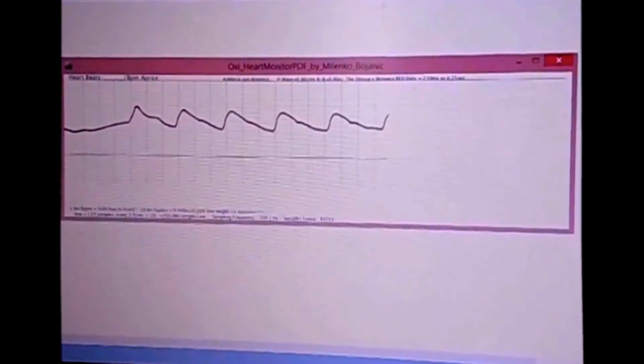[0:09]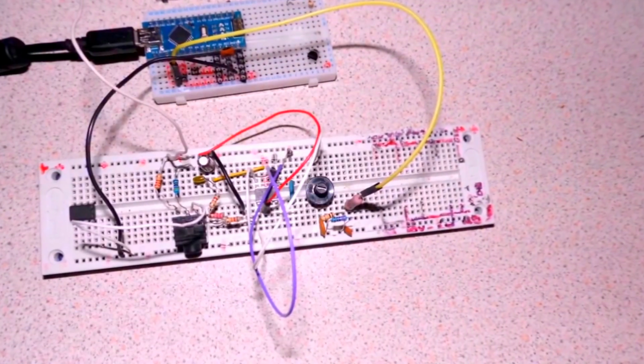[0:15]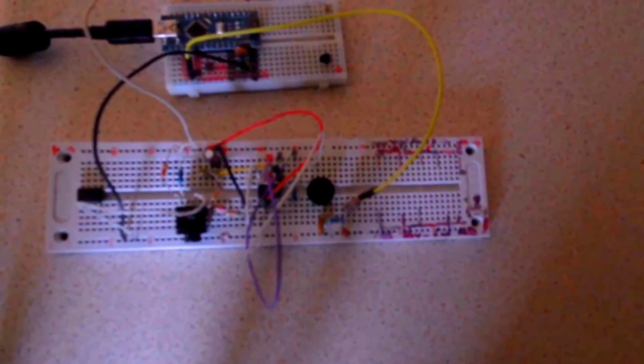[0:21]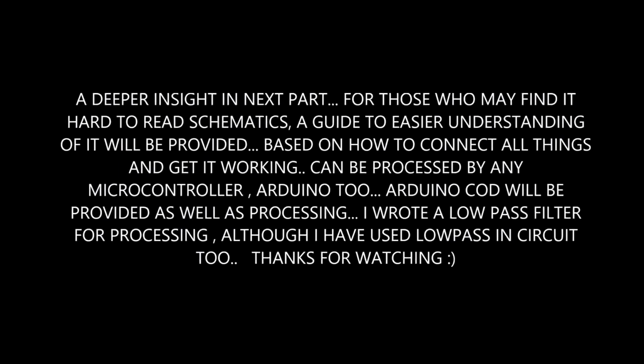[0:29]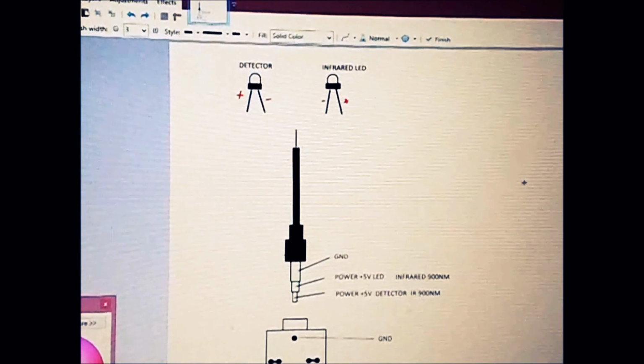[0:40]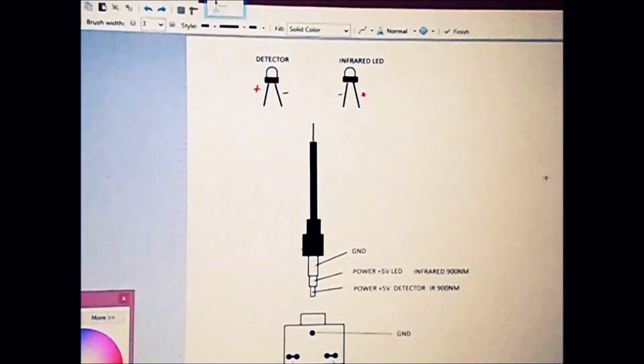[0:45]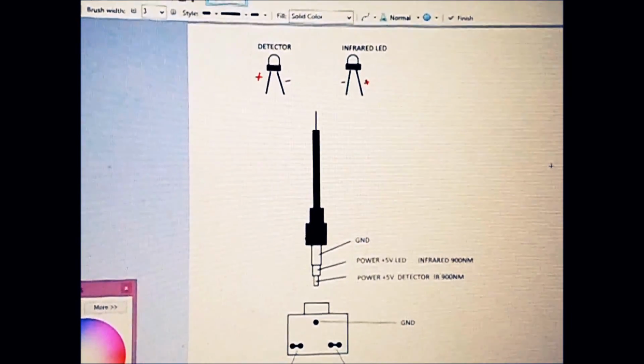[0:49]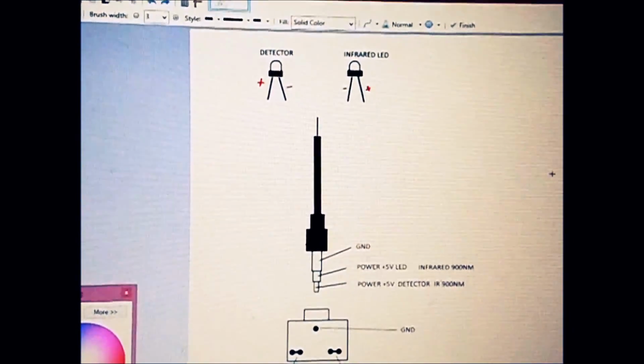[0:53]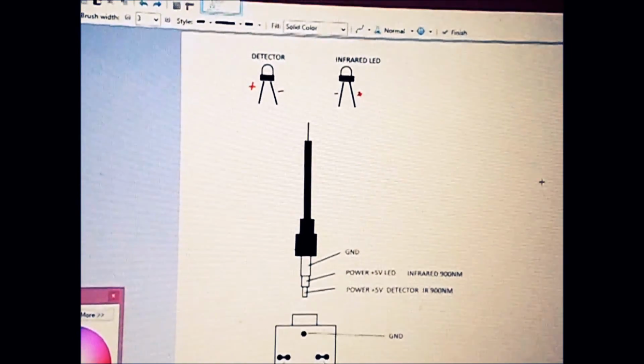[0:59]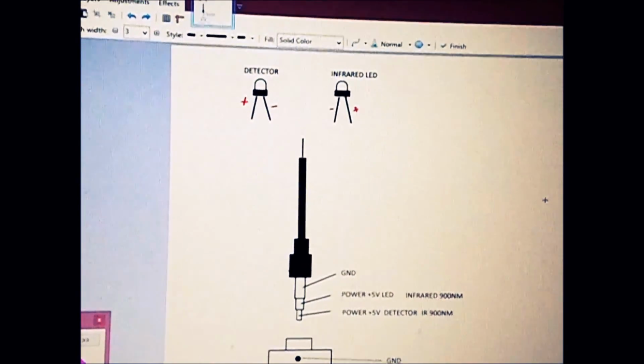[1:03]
Okay, like I said in our first part, we had just a little introduction of what we have made, and that was an oximeter using our LM386, which is an audio op-amp. So let's get back to the cable, which is a very important part: how to make the cable.
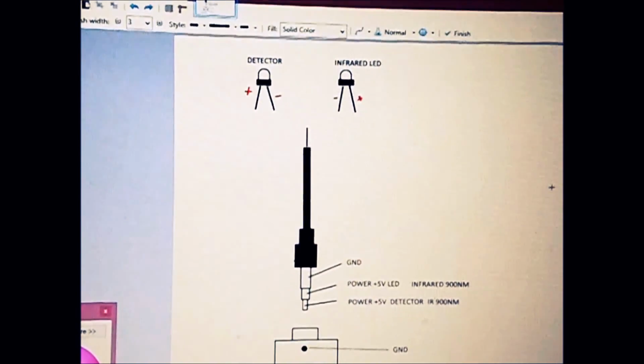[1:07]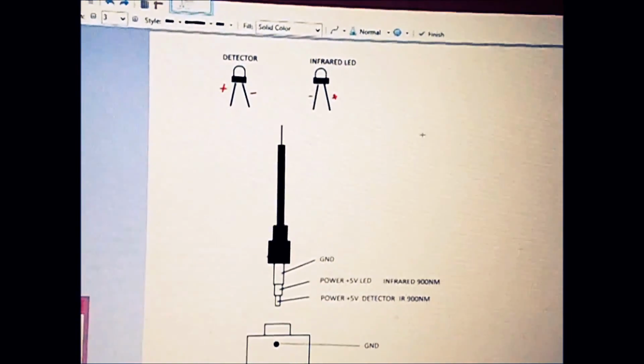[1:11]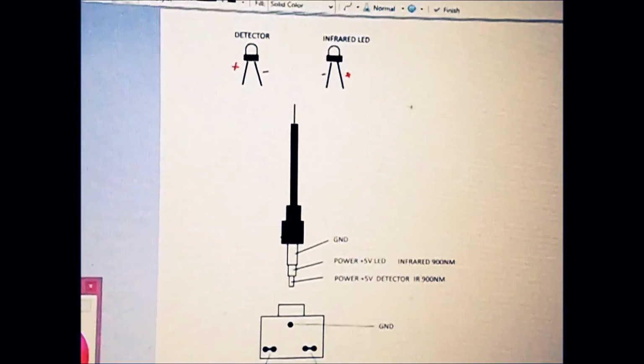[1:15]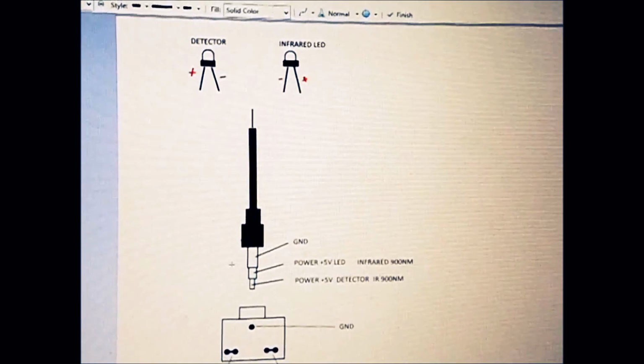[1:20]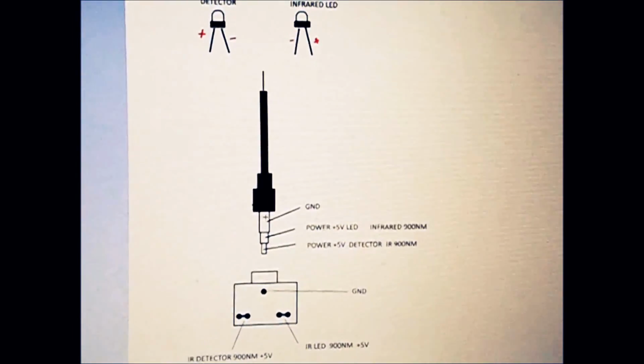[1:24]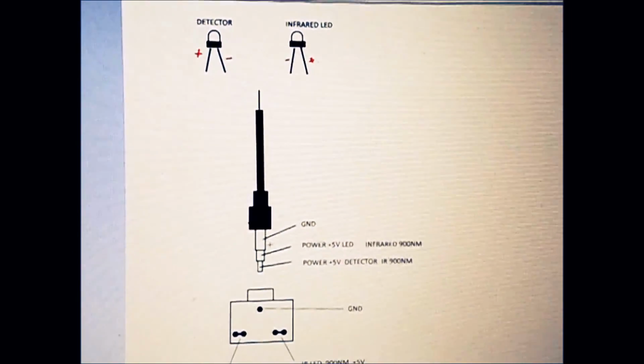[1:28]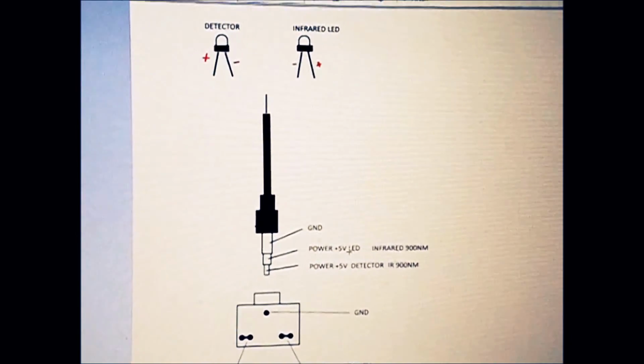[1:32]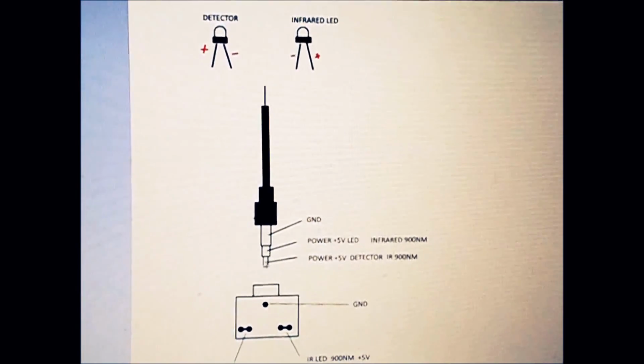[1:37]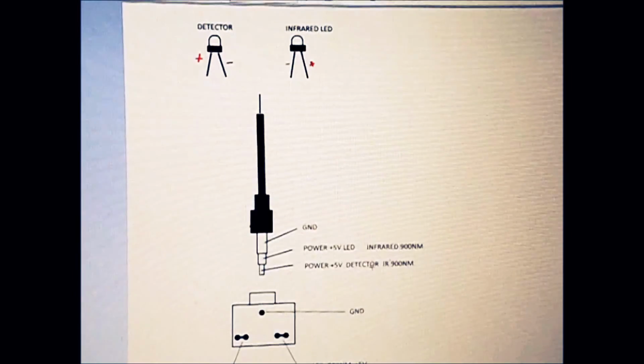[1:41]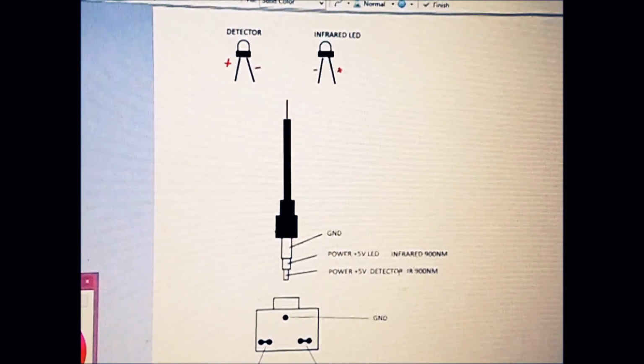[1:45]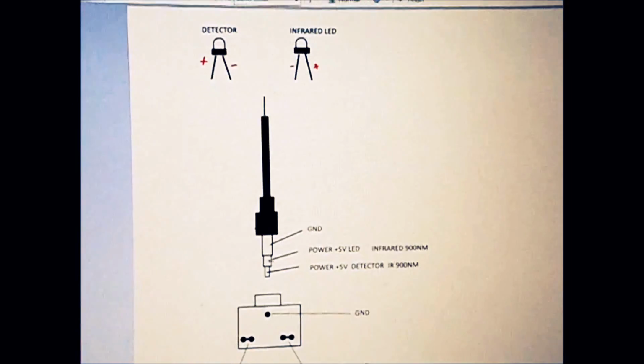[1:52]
In making the cable, we need to know first that we need to connect 3 wires, even if we have 4 connections, and for that we will use an audio cable, which has ground connected to this bit there, which is the first ring. Then we have power 5 volts that will power the LED connected here, and we have power of 5 volts connected to the infrared detector through the resistors, obviously, and this one is going through resistors, which is 150 ohms,
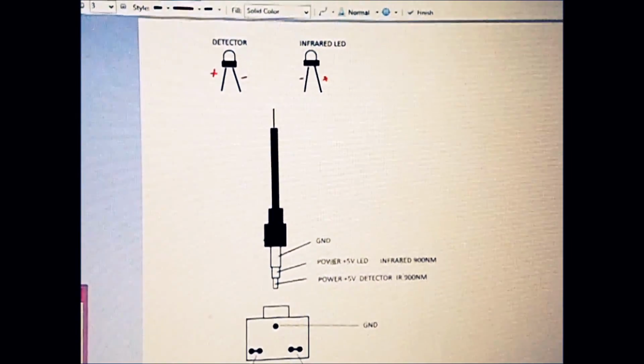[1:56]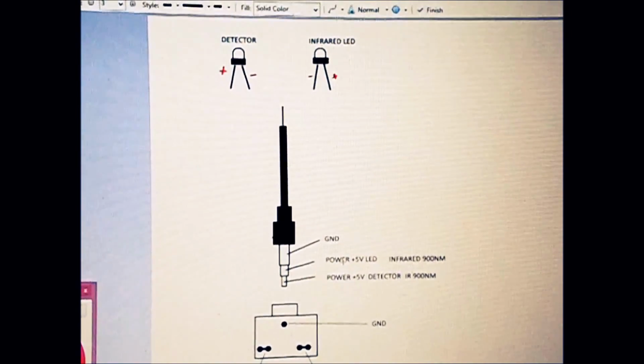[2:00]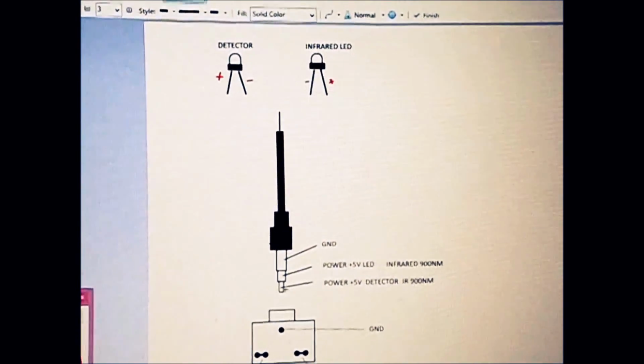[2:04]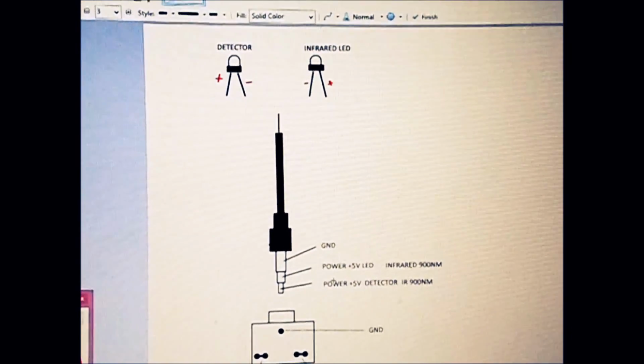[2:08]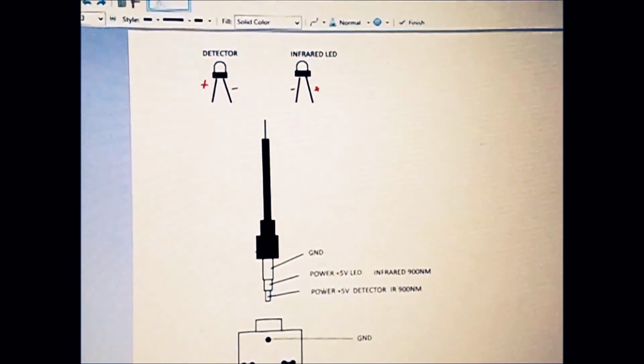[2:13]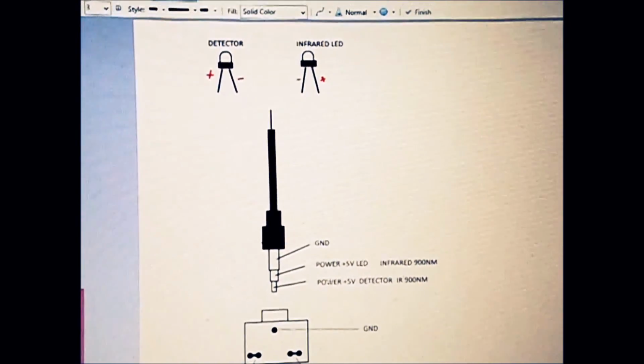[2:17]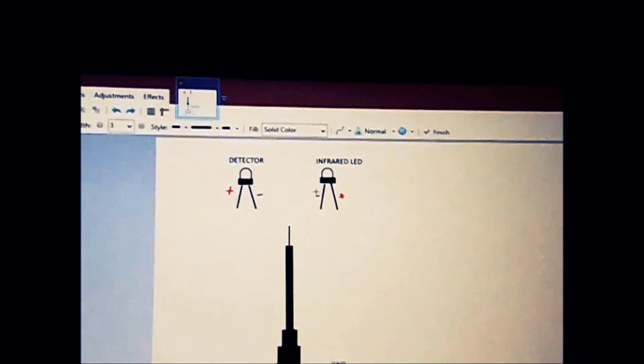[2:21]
that middle one, and I use a pot, which is 1k, so that gives me really a lot of control over the LED. And on the detector we have around 200k, not just a resistor. We have an 83k resistor and we have a 100k potentiometer. So let's get back now to how we need to connect our LED.
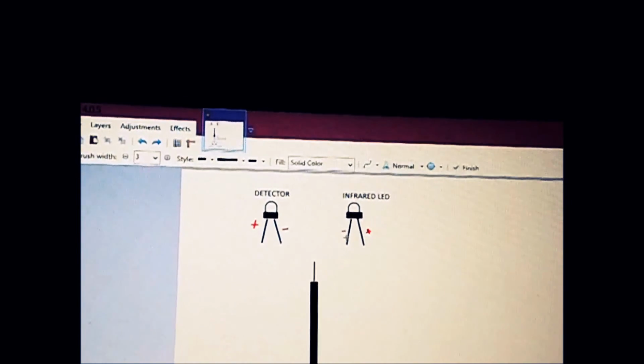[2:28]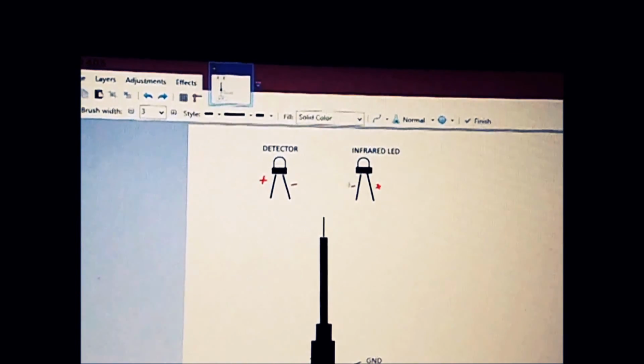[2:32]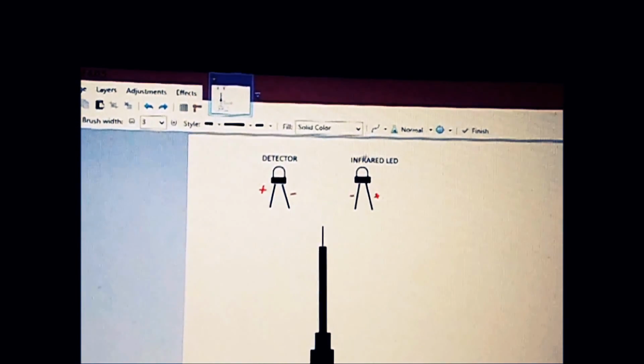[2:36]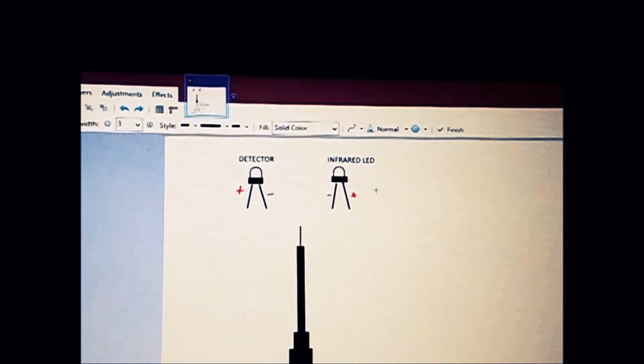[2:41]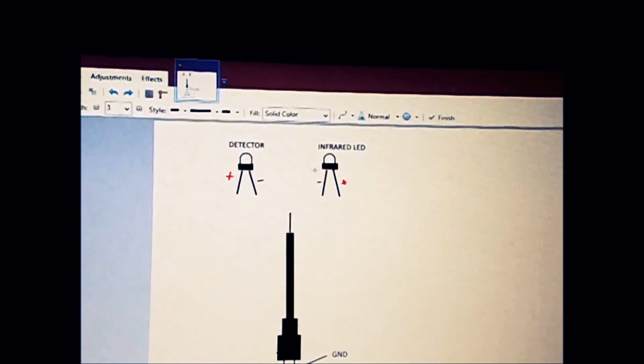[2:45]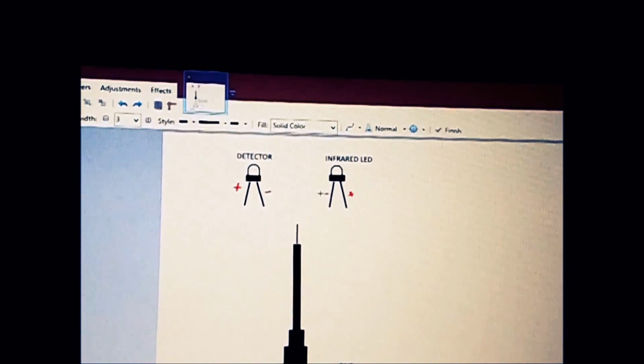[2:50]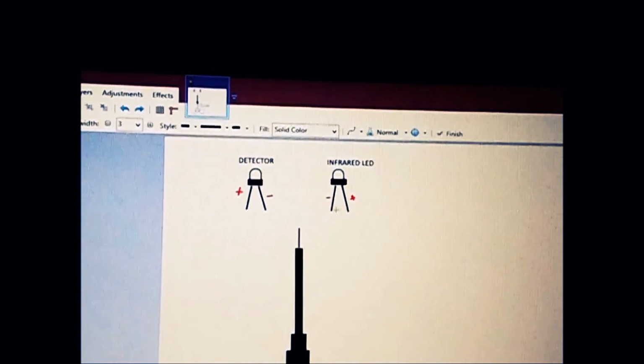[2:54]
First, the LED: you can use your multimeter and connect the black one to, let's say, this wire, which is minus here, and the red one here. And if you get your LED to actually show you light, a little bit of light, then you have that connection right. If you don't, swap it, simple as. So you want your negative to be on this side and positive on this side in this example.
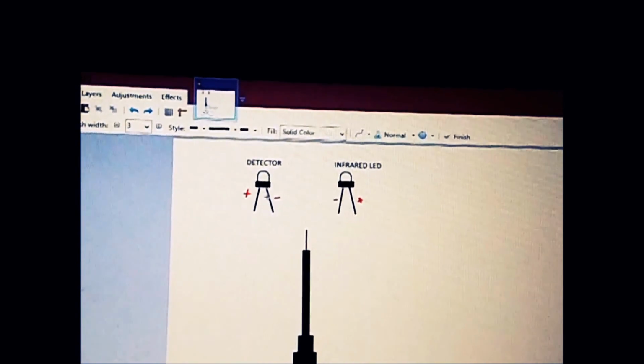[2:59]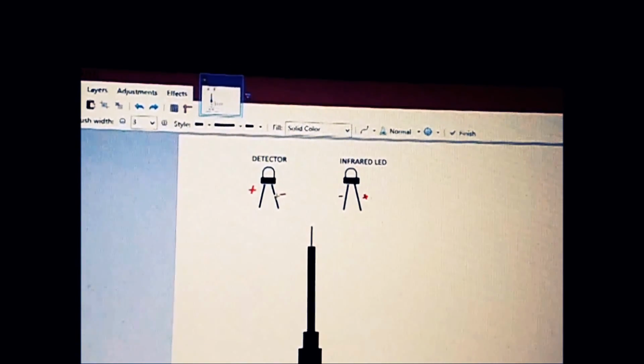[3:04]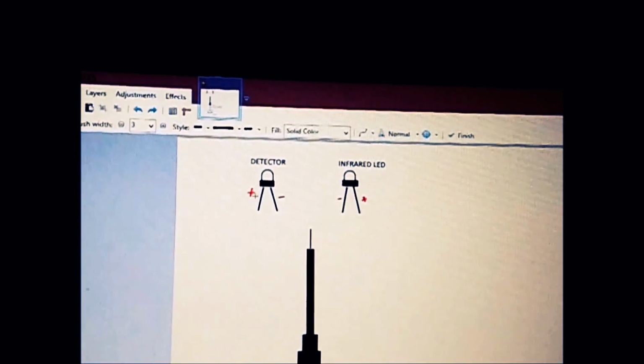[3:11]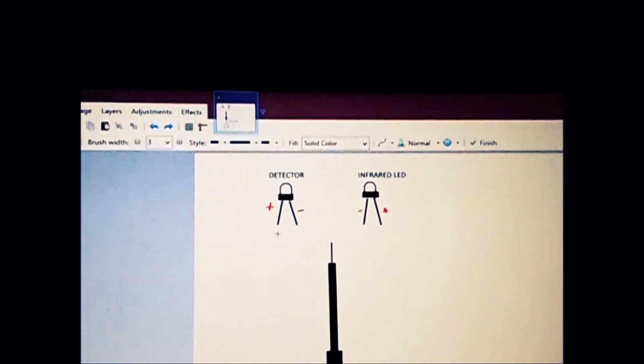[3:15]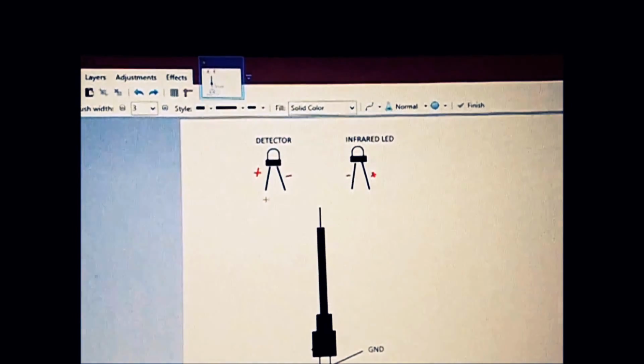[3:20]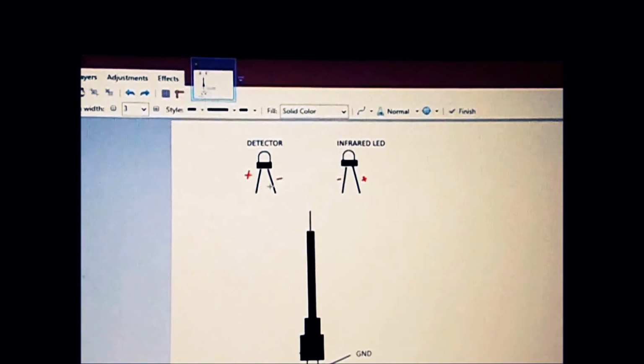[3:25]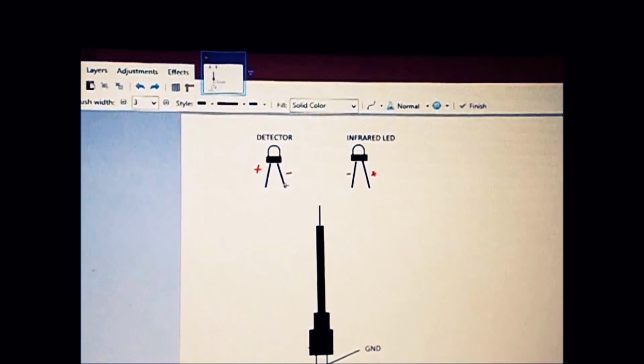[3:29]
Your detector, connect it as well to the multimeter, set to, let's say, 2 meg on your multimeter, and put the black one on one side and the red on the other side, and move it around in daylight, and you'll notice where you have a bigger source of daylight that the resistance actually changes. If you notice that, and your black one is connected on the multimeter on this side, red one on this one, then you have them the right way.
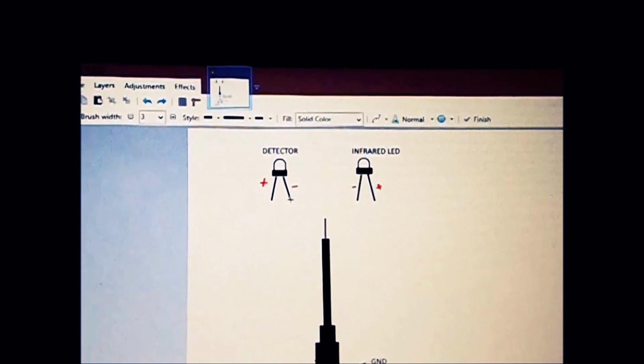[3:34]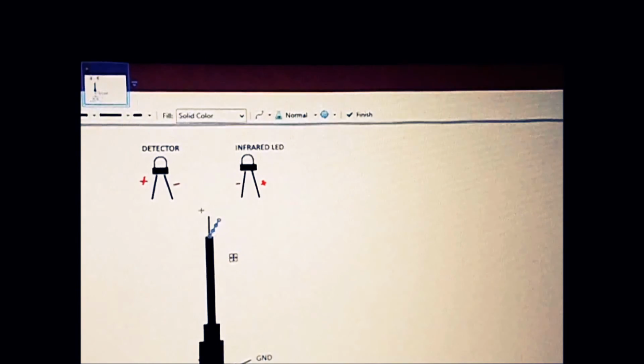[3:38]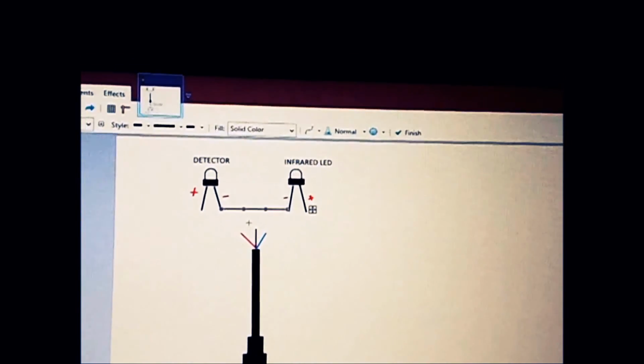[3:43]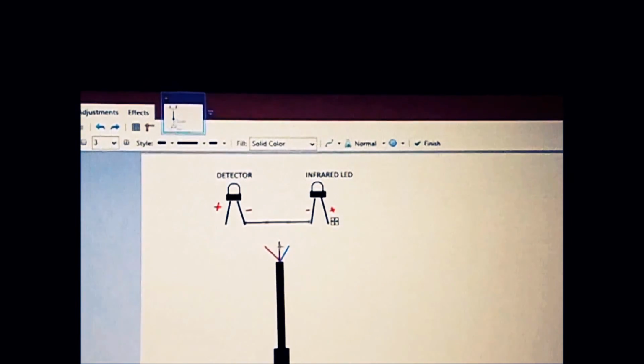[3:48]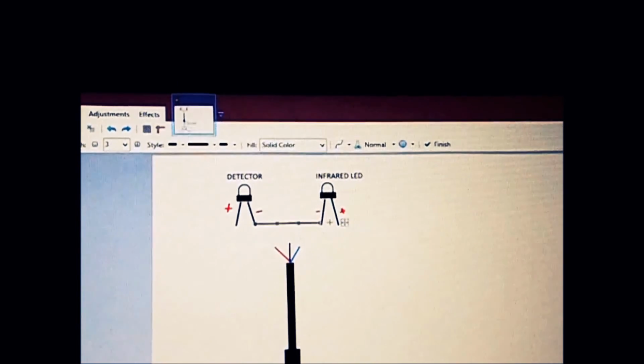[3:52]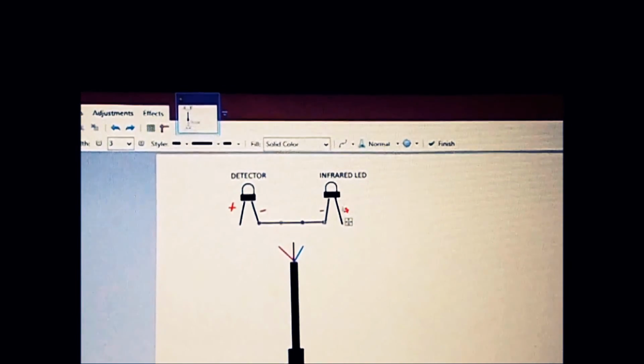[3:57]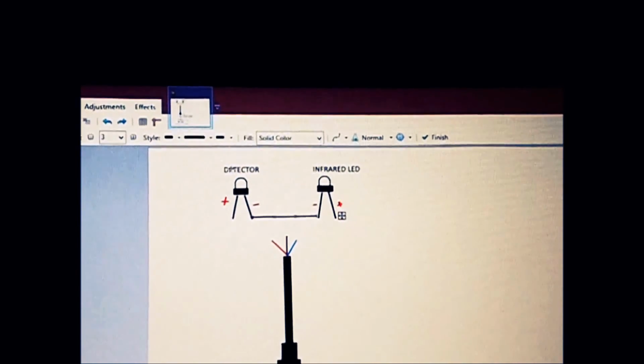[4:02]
Now you need to connect your negatives into one, and we have done that by doing it like this. And then on our cable we'll have ground, which is brown, and the blue one, which is powered in 5 volts to the infrared LED, and the red one will power, let's say, your detector. So let's get back now to the cable.
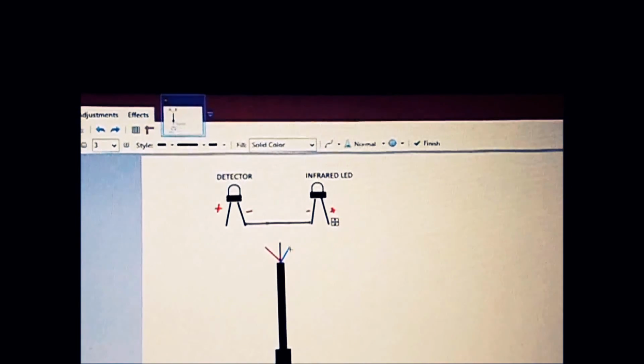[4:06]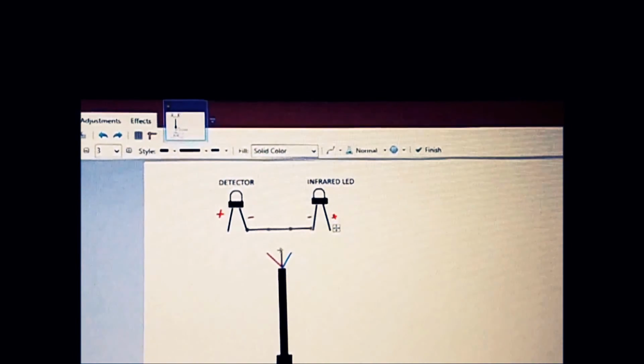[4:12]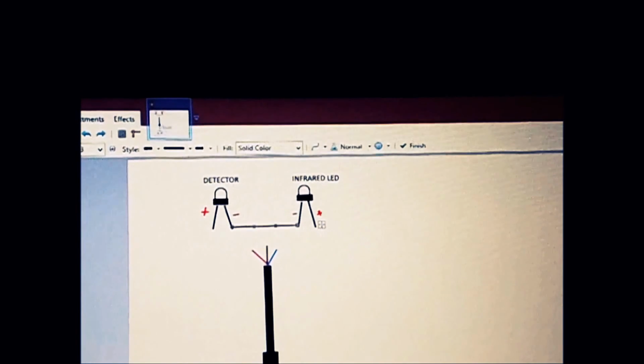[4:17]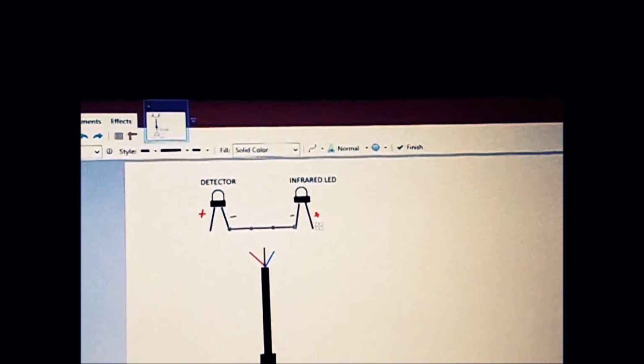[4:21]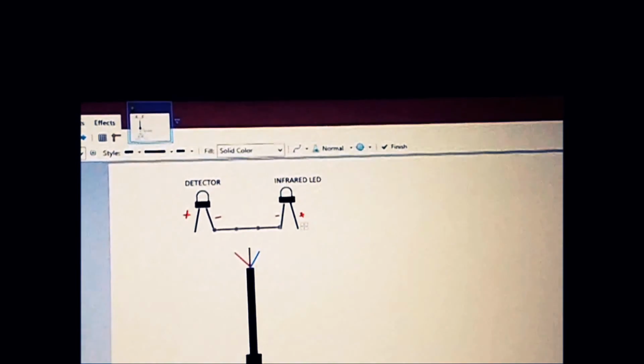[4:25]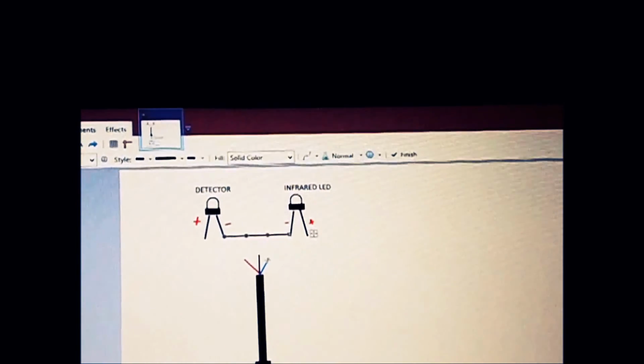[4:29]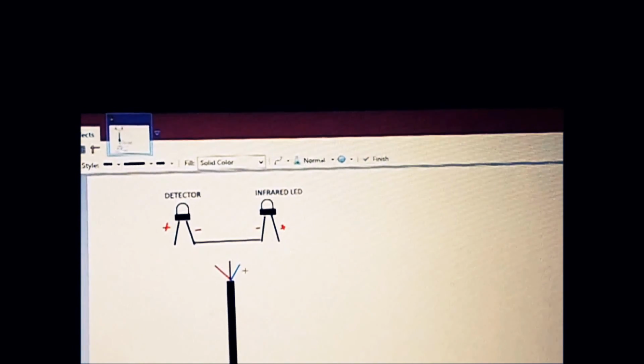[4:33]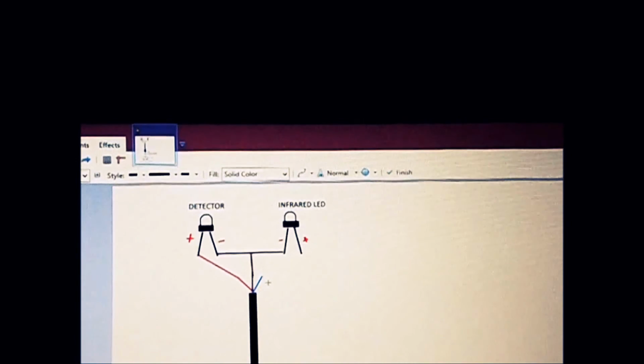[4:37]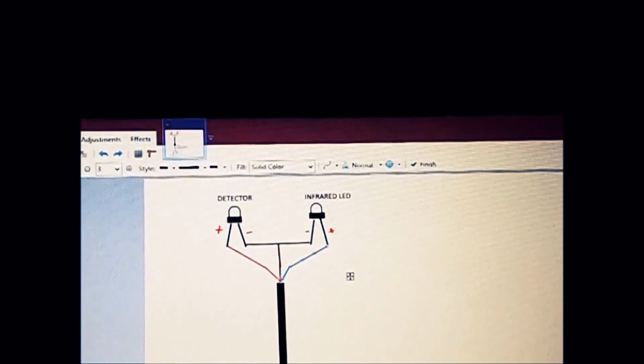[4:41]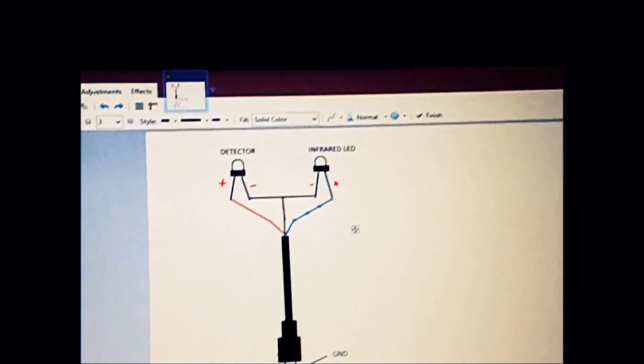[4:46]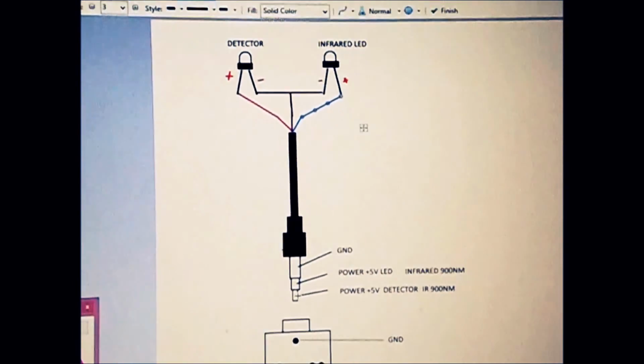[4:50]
Connect the multimeter to your blue one, let's say, or whichever color it is. First connect the multimeter to ground, black one, and find with the other end of your multimeter ground here. Then connect to any wire, and if you detect that middle one, and it happens that this is the blue one, then the blue one you will connect to your LED, and connect the multimeter to your red, and then connect it to your bottom one. Sorry, I moved it off.
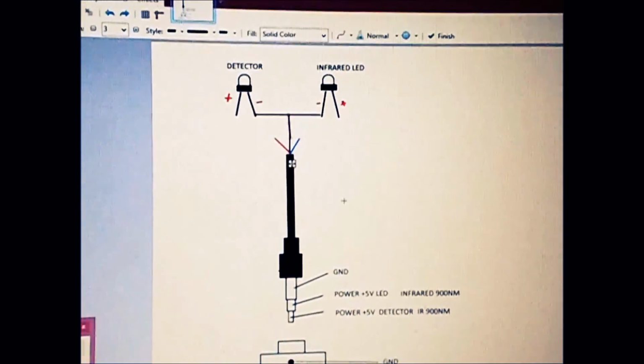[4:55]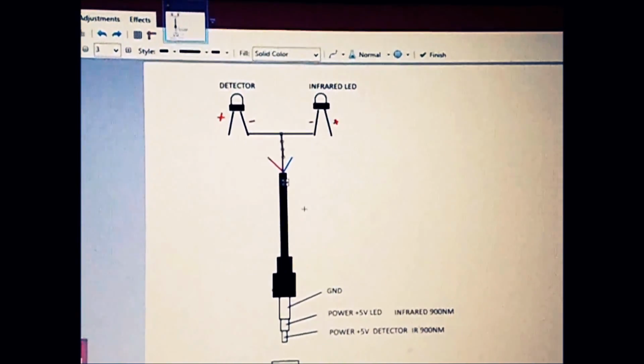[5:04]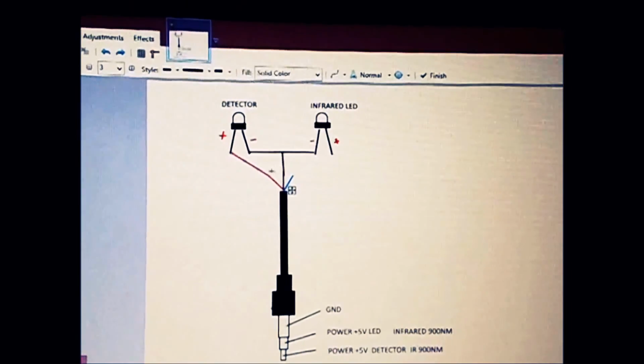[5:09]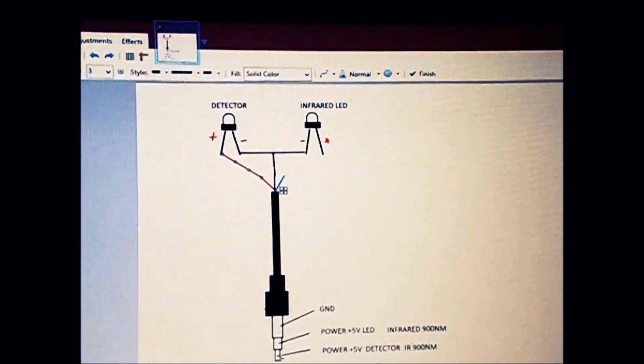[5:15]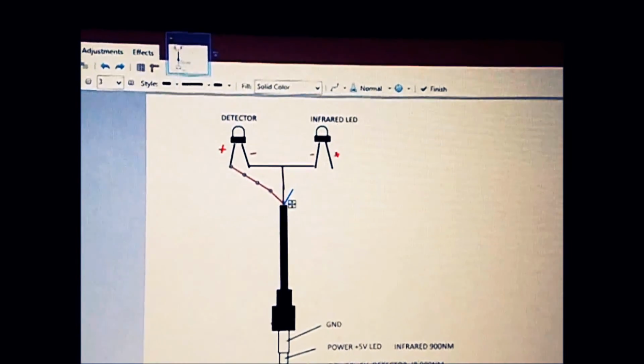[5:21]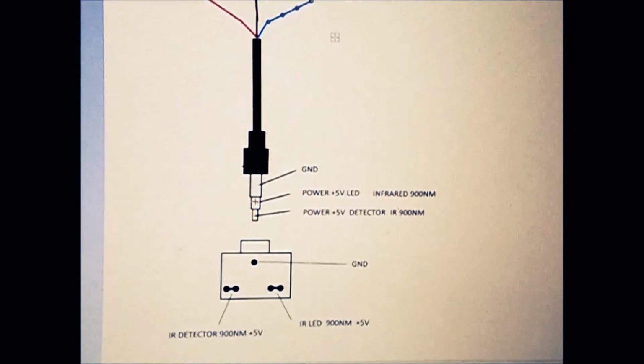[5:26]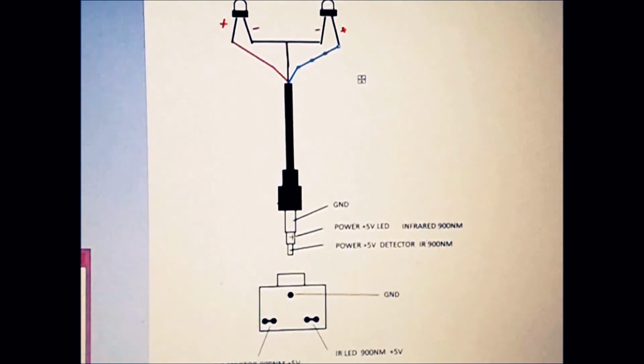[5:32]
Let's get back: connect ground to the multimeter and check it here, where do you get a reading. Then connect your detector on the multimeter here and connect it on the bottom one, and you should get a reading. Then connect your blue wire and the middle one in this section there, and you should get a reading. So if you connected everything right, that's how it should be.
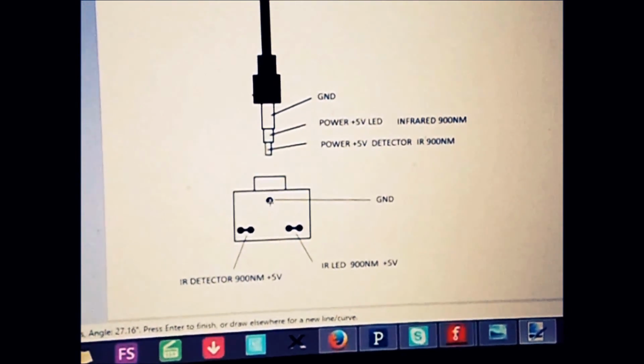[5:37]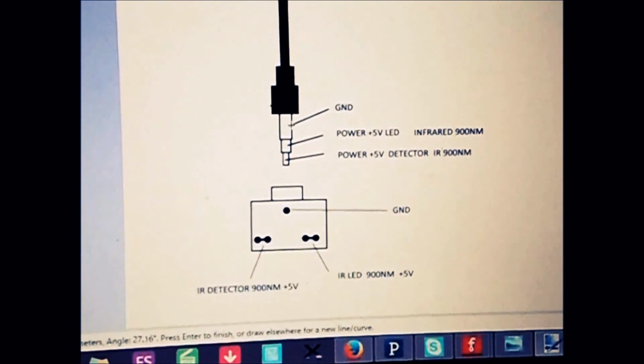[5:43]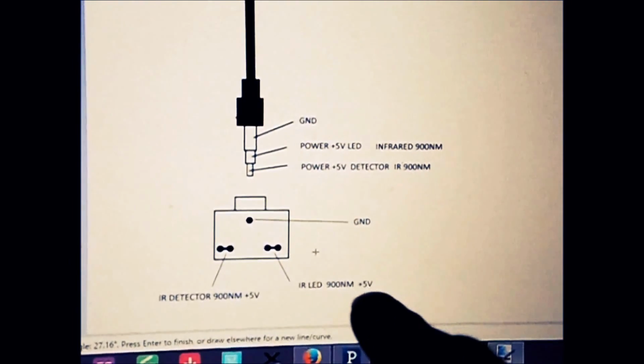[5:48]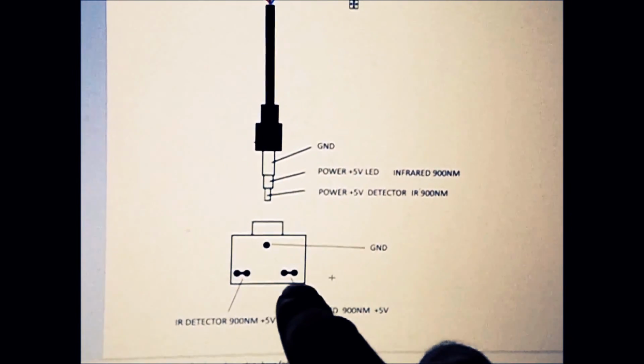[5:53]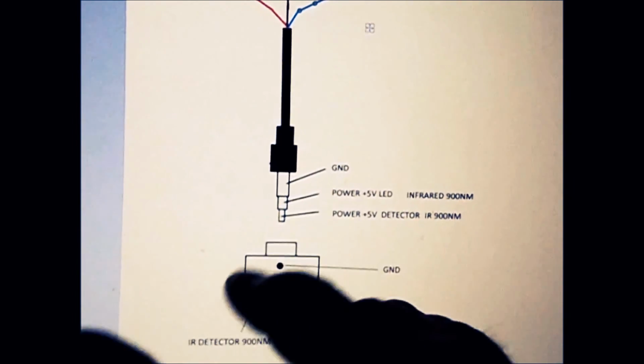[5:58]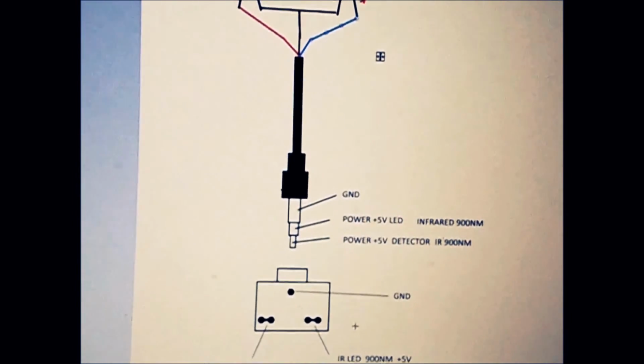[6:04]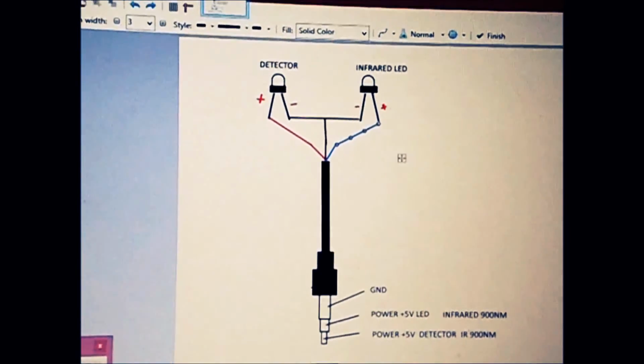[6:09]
On your audio jack, you have ground connected here and that will be connected when you plug it into this one. You have your LED on this side, and these two are like one, they are connected anyway, and on the other side you have two, they are connected as well, so it doesn't matter, they work as one. So that will be your detector. For this example I have used an infrared LED and detector, which is rated at 900 nanometers, and that's very important.
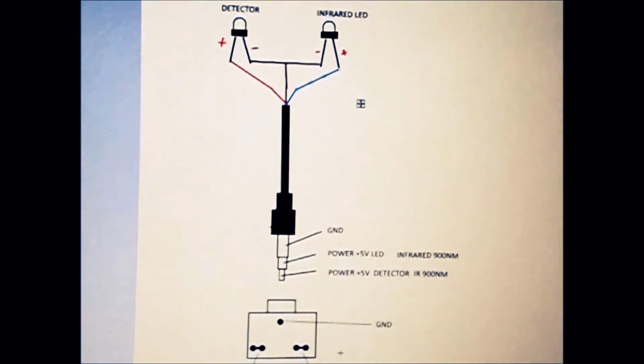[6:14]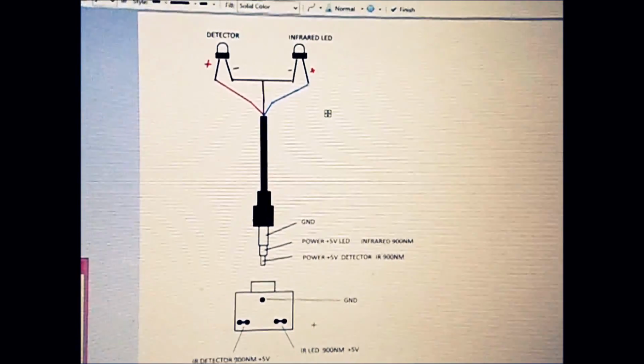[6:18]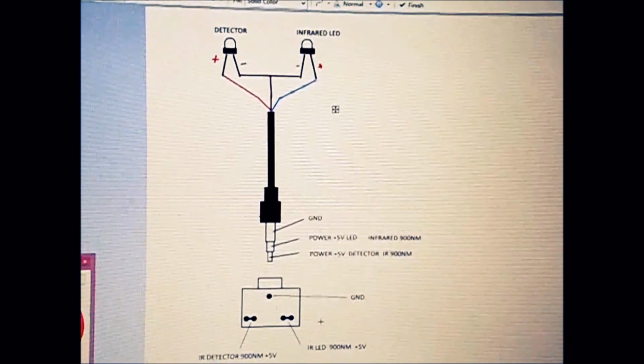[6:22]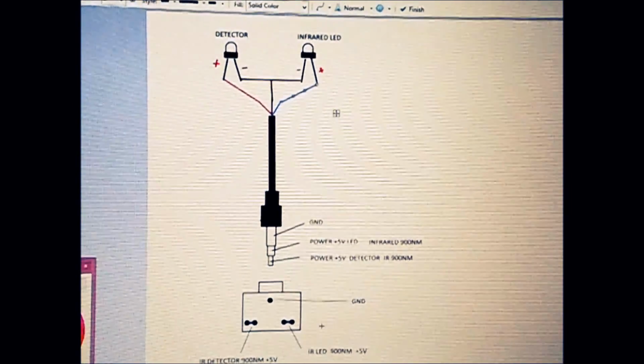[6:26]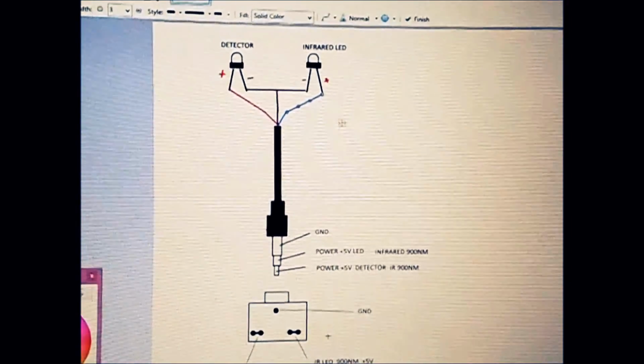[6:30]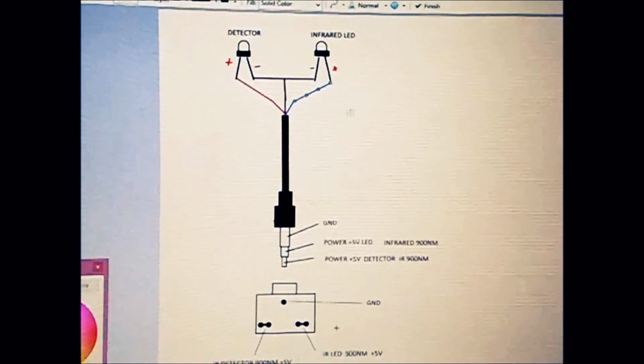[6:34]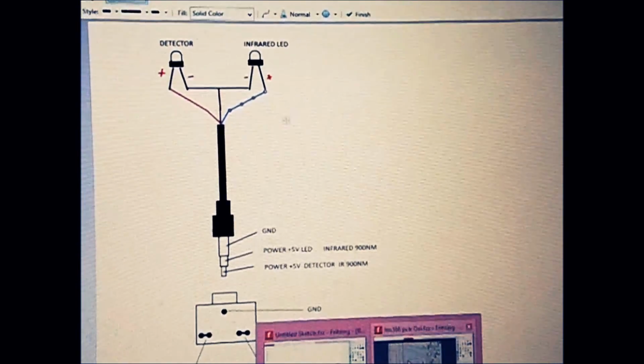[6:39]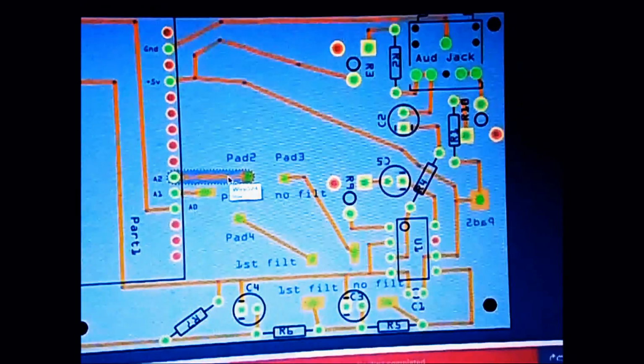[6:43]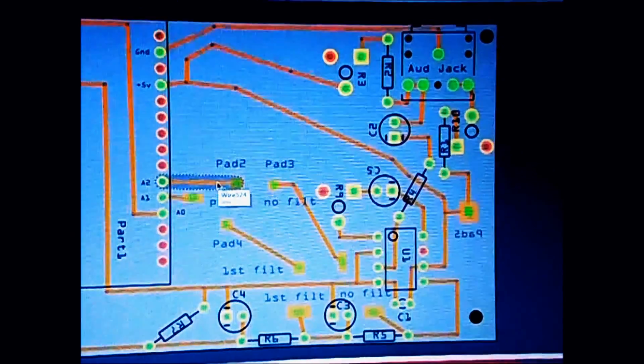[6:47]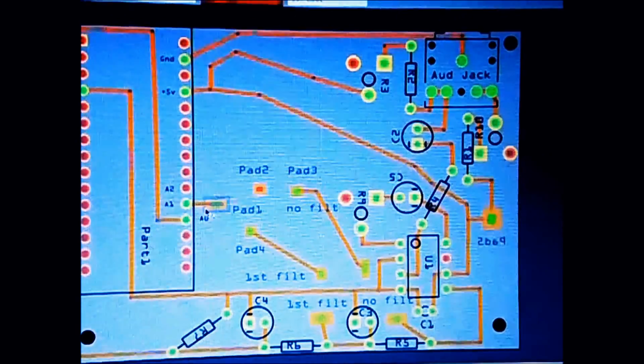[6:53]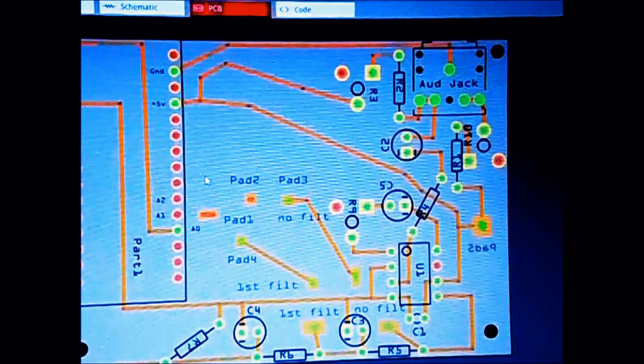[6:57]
So if you have connected everything right, this is how it should look. So picture it or freeze it, or you can slow it, stop it, and that's it. You can make your cable and make your finger clip for your finger. So we will move now on to schematics, which is, in this example, I don't need those connections at all.
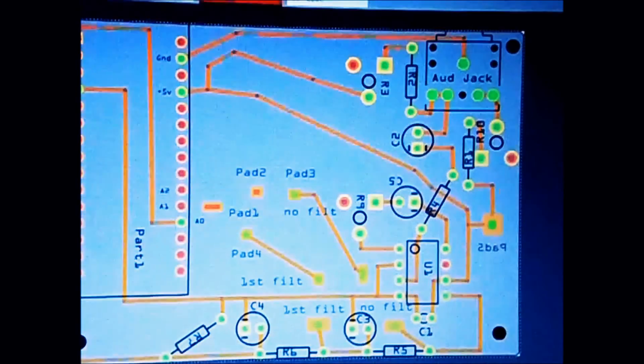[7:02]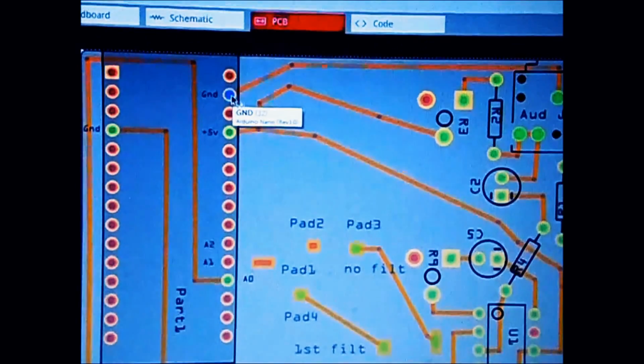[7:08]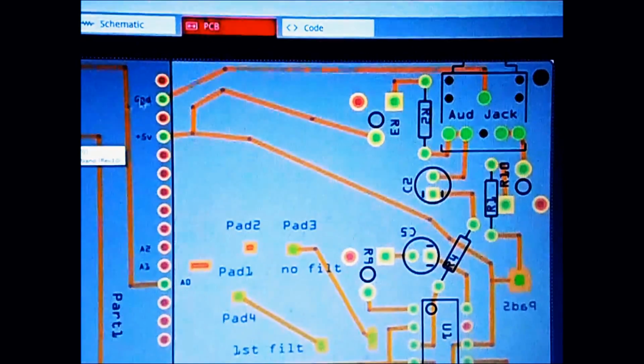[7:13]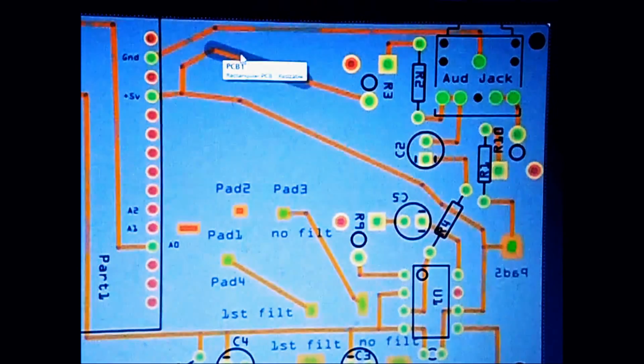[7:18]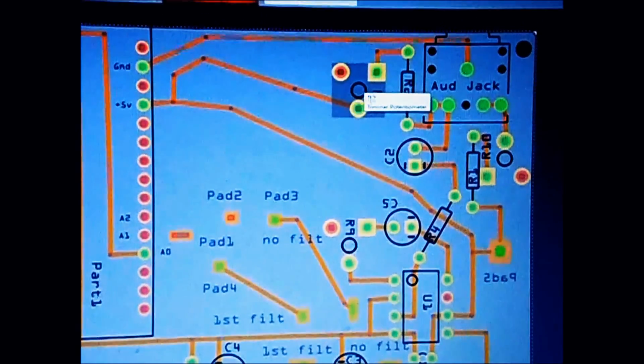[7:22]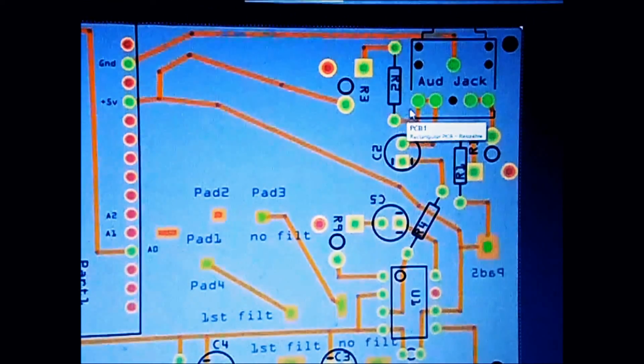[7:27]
Okay, we're going back to the jack. So we have here ground, and it goes right to ground here. We have 5 volts going from here, and those 5 volts are split in two. One is powering the detector through the 100k pot, and it goes in the 83k resistor, and it goes right into your audio jack, like we explained in the previous example.
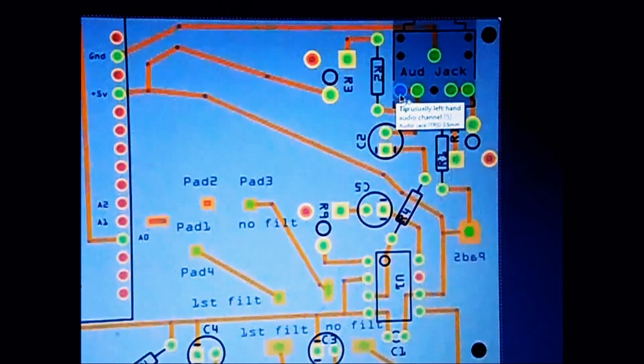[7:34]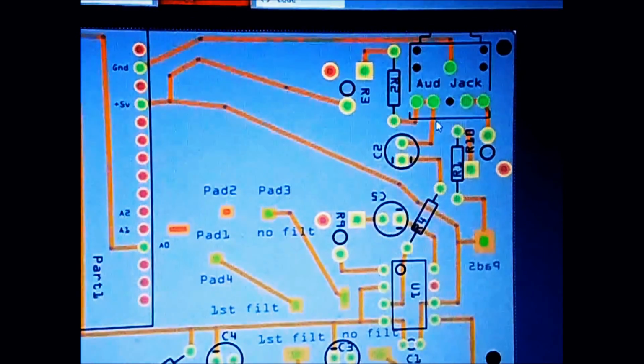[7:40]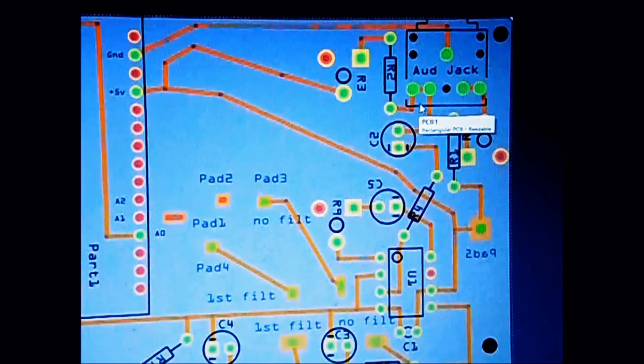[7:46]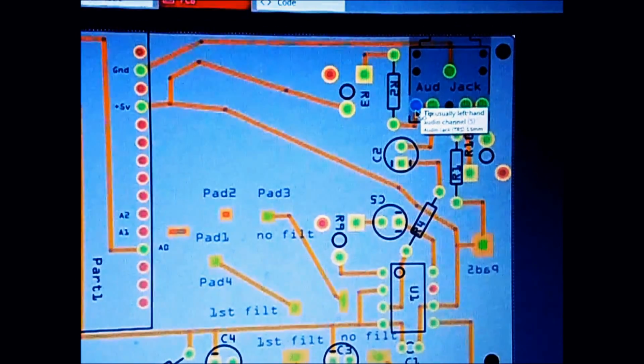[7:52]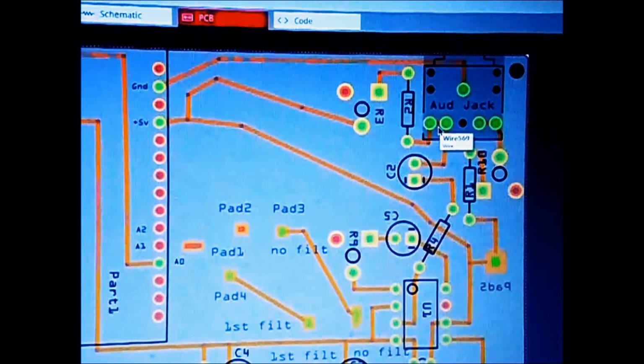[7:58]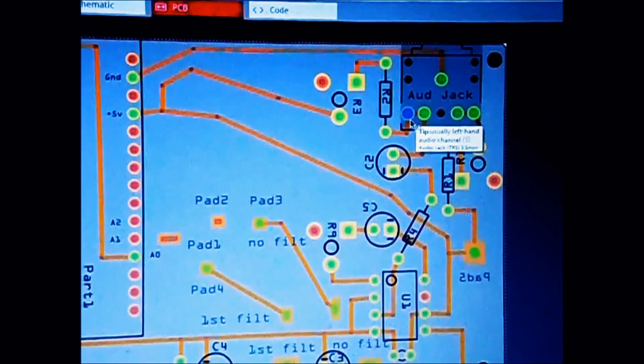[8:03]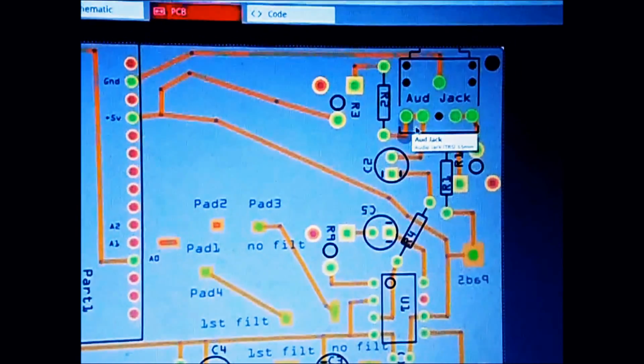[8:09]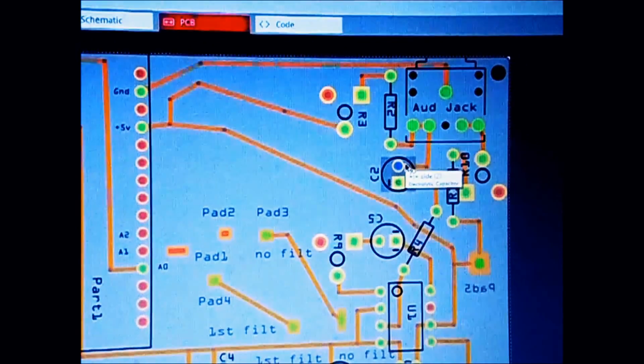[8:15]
And then your signal, when you receive some; if you don't receive anything, it will be 5 volts. So you have 200k roughly sensitivity here, and if you receive signal, it will drive it to the ground. So your signal will be different between 5 and 0. Obviously, because of 200k, it won't be really that much down to 0 volts, but you will be able to fine-tune it yourself this way. Then the signal goes out into a capacitor. I will get back to the signal after.
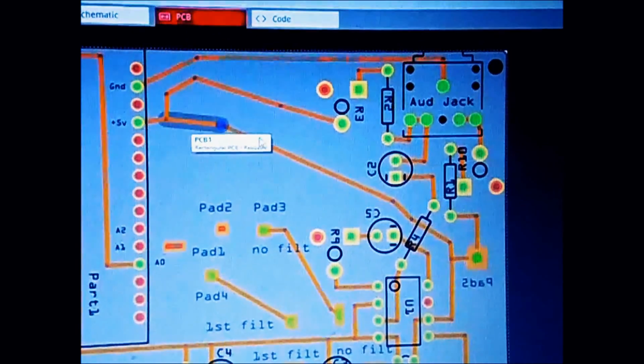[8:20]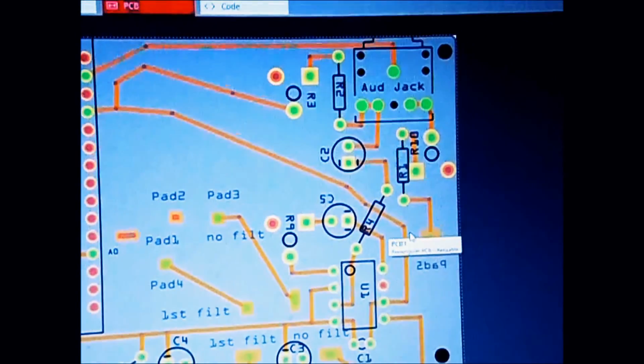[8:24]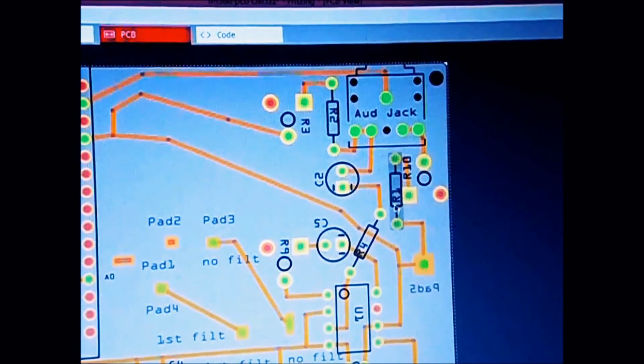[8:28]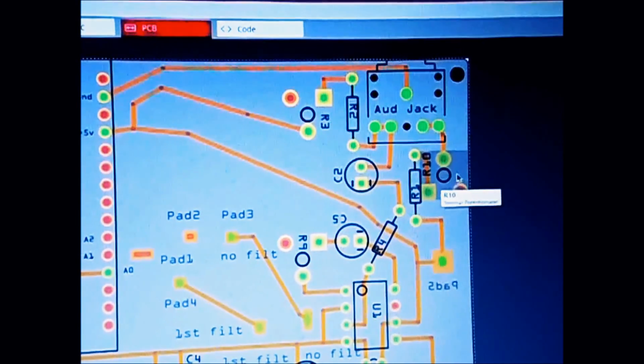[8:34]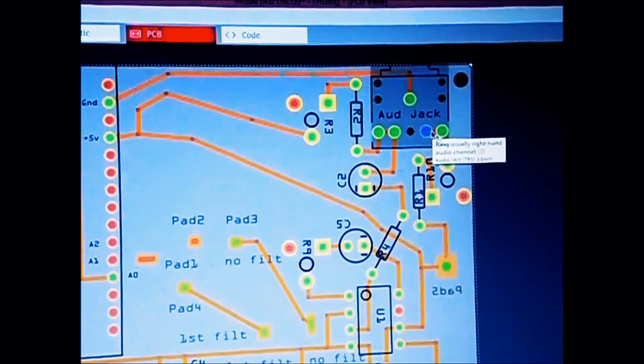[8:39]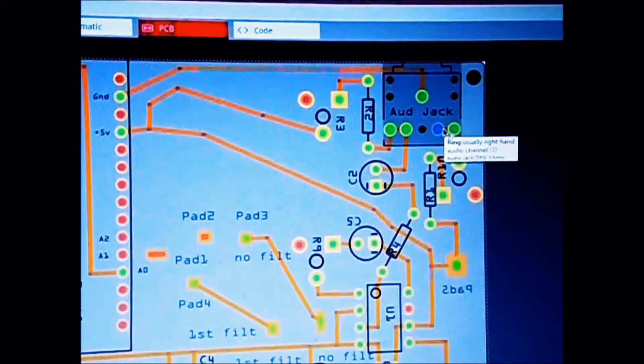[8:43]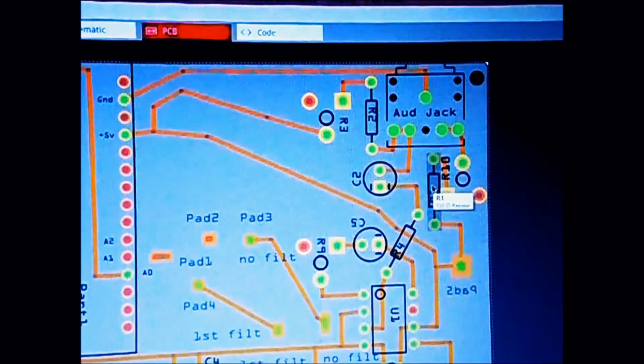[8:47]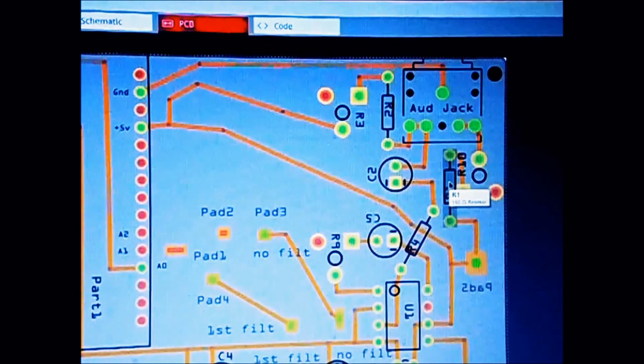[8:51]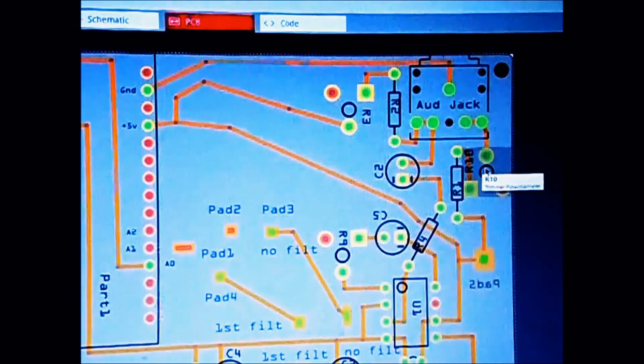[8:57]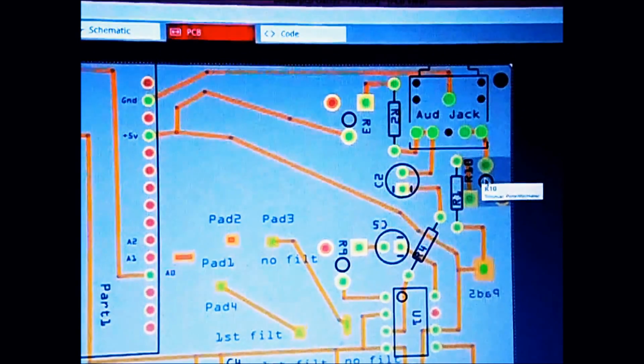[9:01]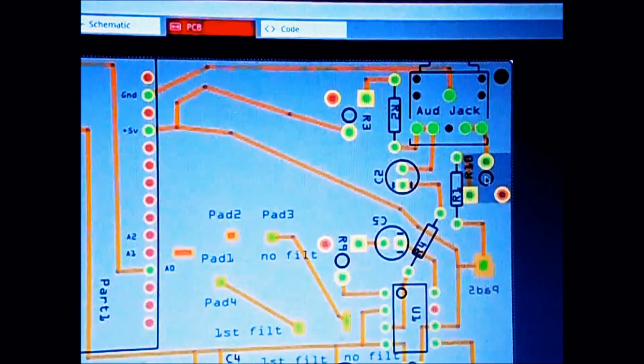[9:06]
So we go now on 5 volts again, goes here under this resistor, and it goes back onto the 150 ohm resistor, and it goes on the 1k pot, and it goes right into your jack, and that powers your LED. When you turn the pot to minimum, actually only 150 ohms stays, and that's full power. When you turn this to maximum, then your LED will be really weak, and that's what you want to set it up to, really weak when you start getting your signal, and then gradually increase it.
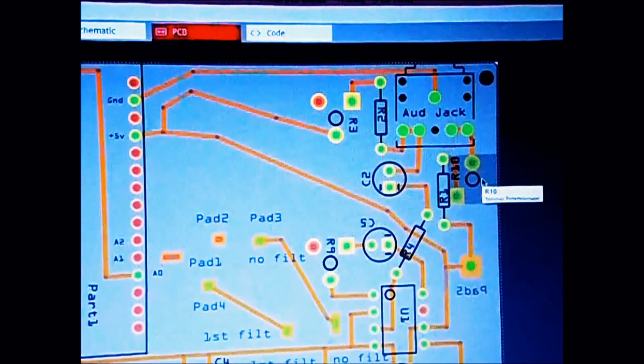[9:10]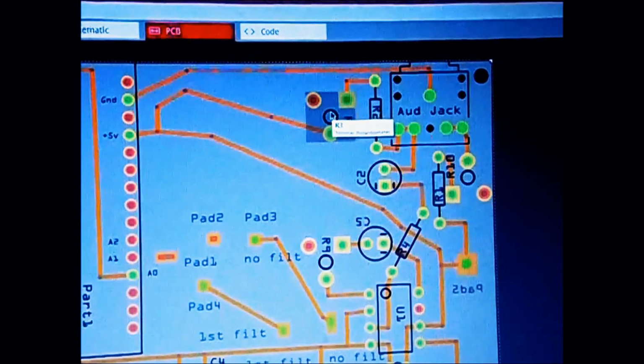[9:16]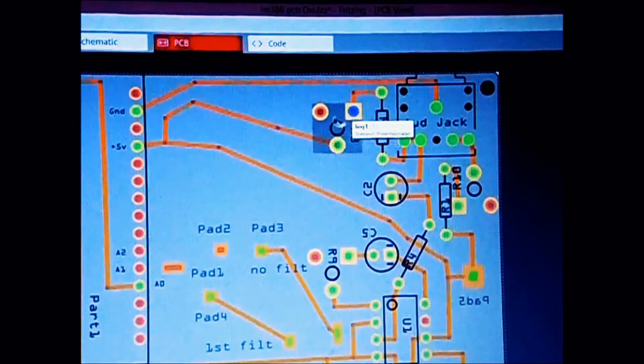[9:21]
It's very important, because otherwise you will not get a signal and you will be disappointed. Then once you get signal here on the screen, then increase the sensitivity of your detector. So previously you have to put this pot to minimum as well.
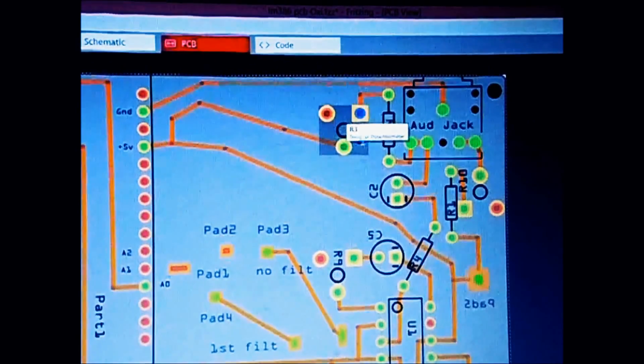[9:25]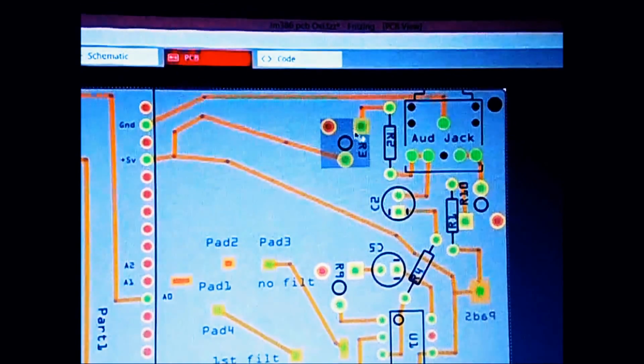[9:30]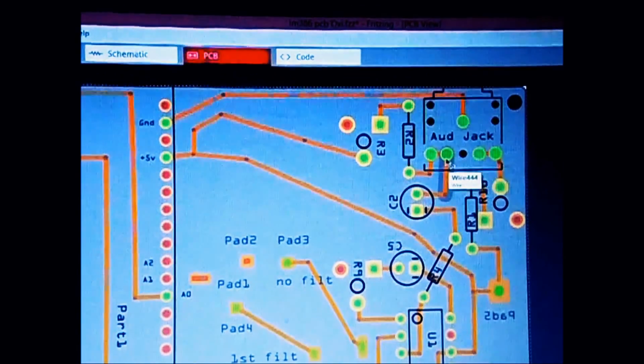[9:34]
That means on this side actually, and then gradually increase it, and you will get a signal. So okay, let's say now we have signal. Signal is coming out here, and it goes in
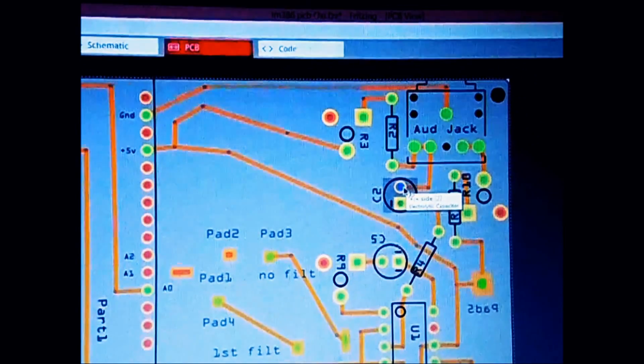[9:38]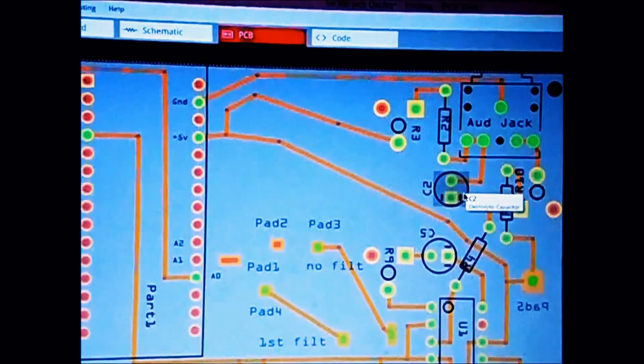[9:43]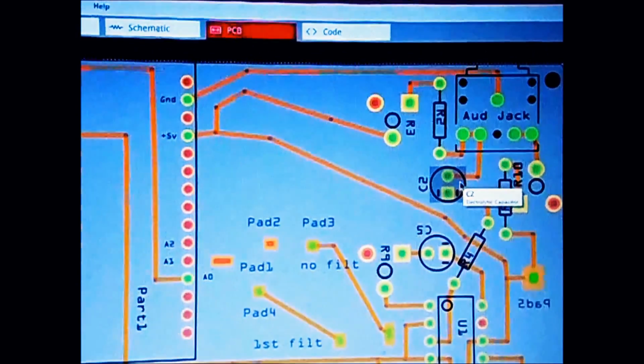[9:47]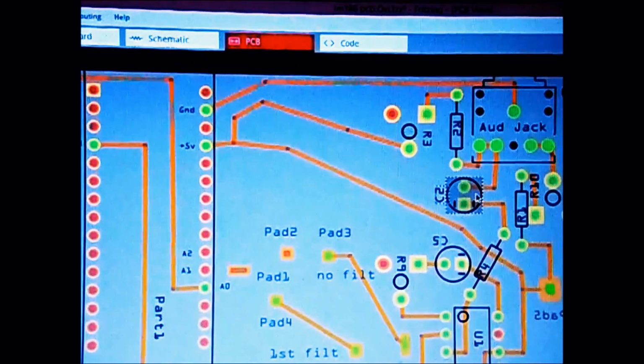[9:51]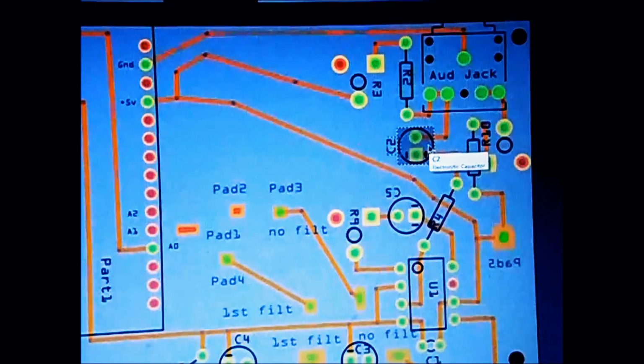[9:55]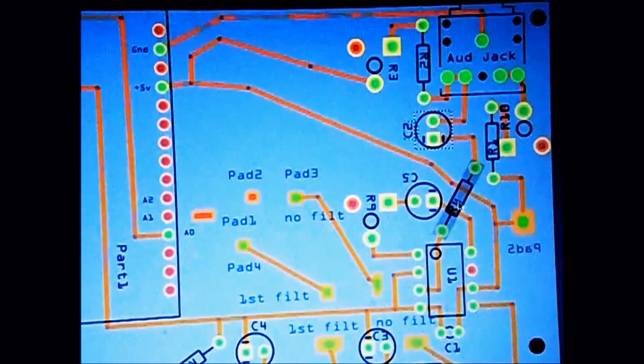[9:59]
capacitor, which is, I'm not sure what capacitor I have put in this schematics. Probably, I think, oh god, I have to have a look. I think it's 1 µF, and it goes through 83k right in your pin on your LM, pin number 3.
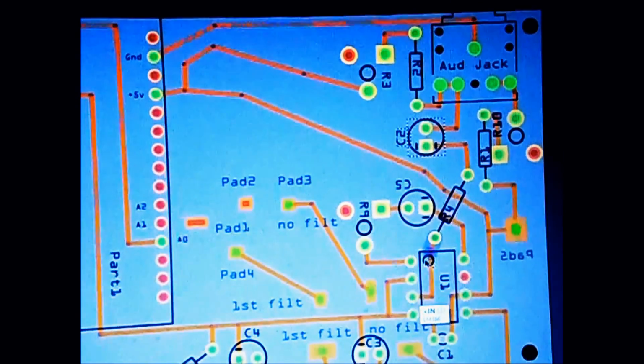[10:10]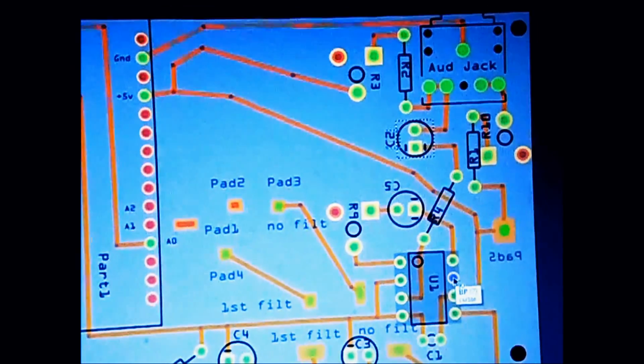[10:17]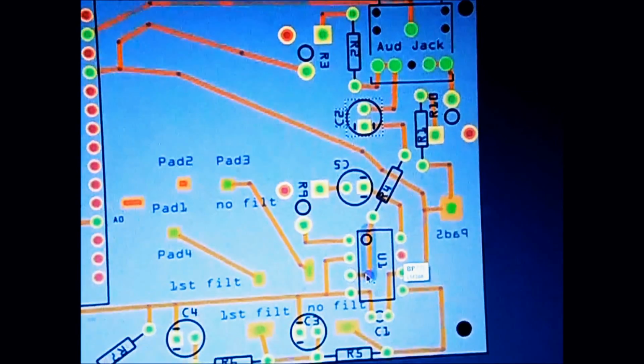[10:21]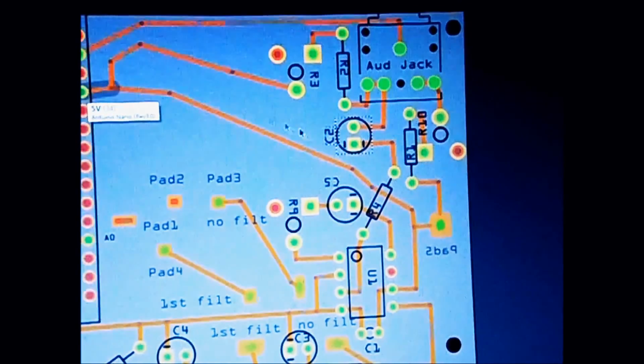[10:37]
Your LM is turned up this way. You have that little mark. That's your pin 1, 2, 3, 4, 5, 6, 7, 8. 7 is bypass, and we don't need it in this example. So our signal went in pin number 3. Number 2 is one of the inputs as well, but it's attached to the ground. Ground is attached to pin number 4, and pin number 6 is 5 volts that we get from this as well, and we power our LM.
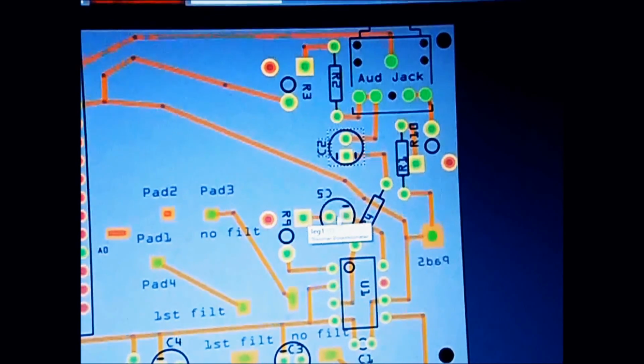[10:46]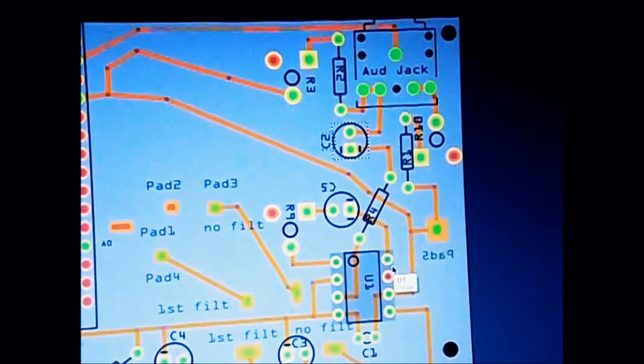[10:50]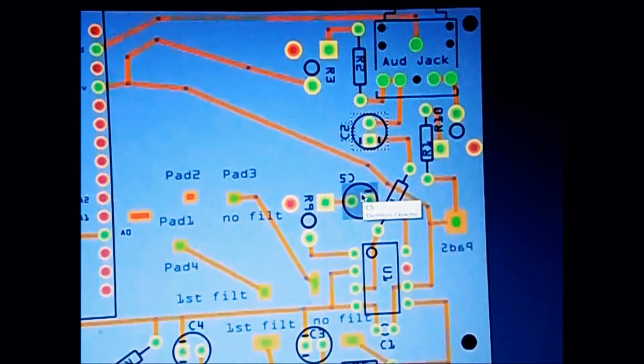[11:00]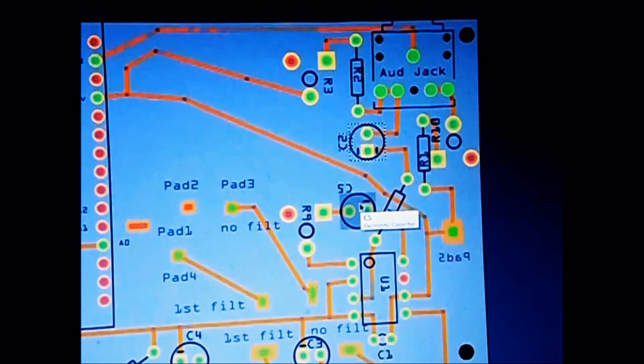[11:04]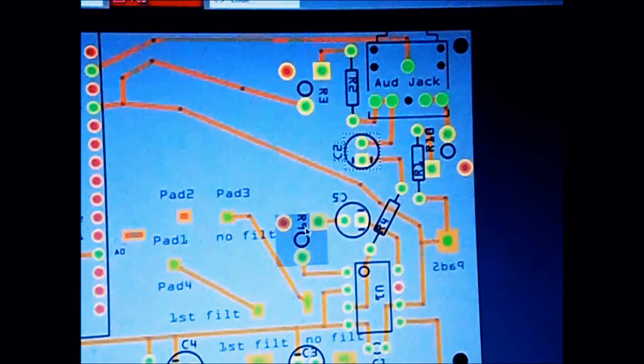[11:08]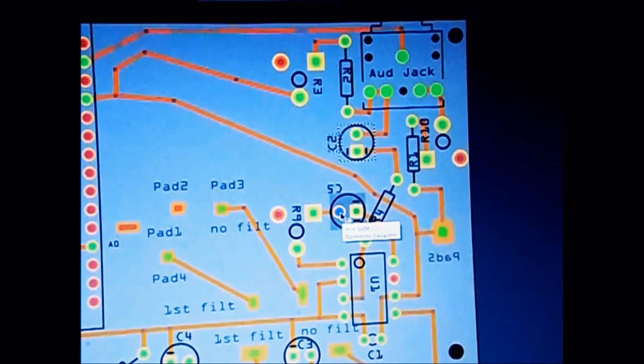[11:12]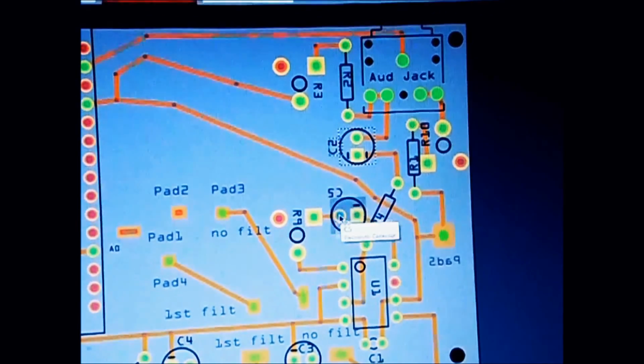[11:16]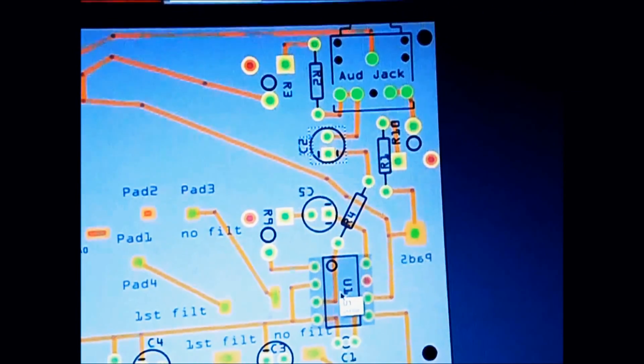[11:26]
On LM we have one interesting thing to control the gain. If we take all this off and don't connect anything to pin number 1 and 8, we have gain of 20. But if we connect only one capacitor of 10 µF without this pot, we will get 200 gain. And I put 1K pot so I can actually fine tune it here. And capacitor has to be, this end has to go positive side, has to definitely end up on pin number 1, and your negative side of your capacitor has to end up on pin number 8.
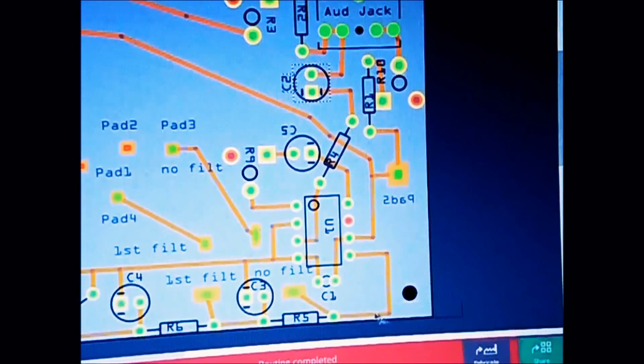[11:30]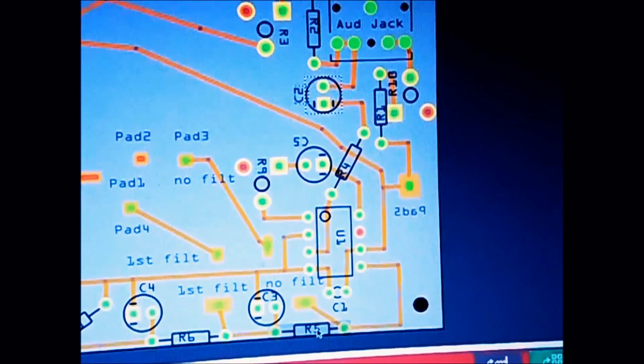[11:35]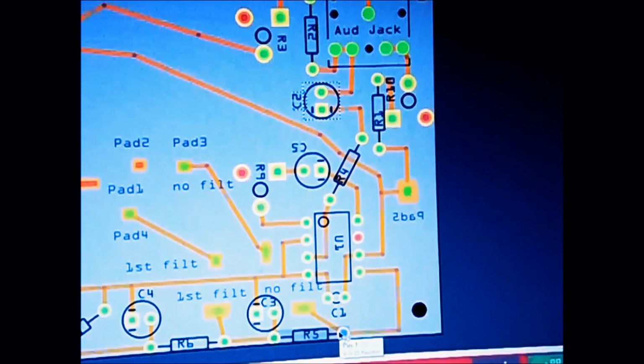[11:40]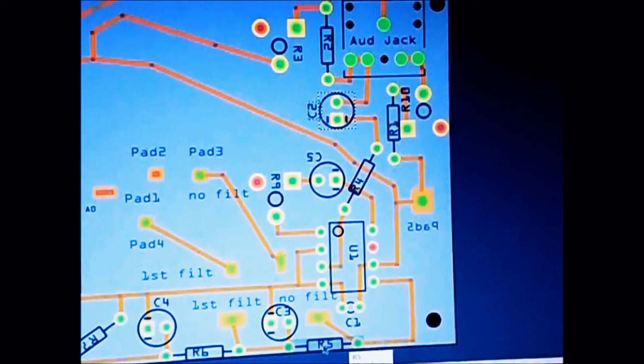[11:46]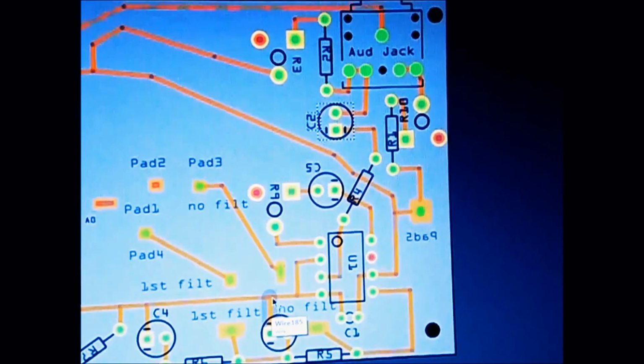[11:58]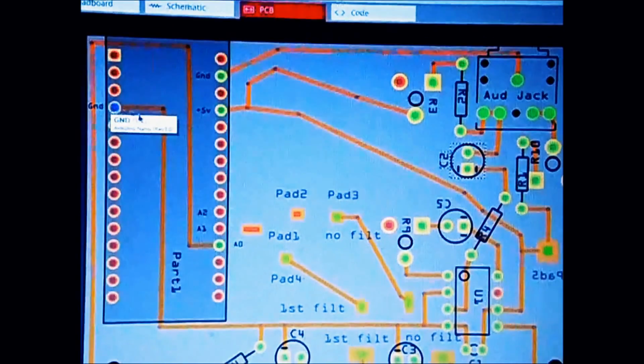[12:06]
So now when we have signal, we can move on to filtering. Signal goes here like that, and it goes in. I have changed this in reality. I put one pot of 10K, and then in series I connected 22K resistor, and then that travels further down. But here we break it with a capacitor and ground it here to ground. This wire is connected to ground, as we can see. It goes here to ground.
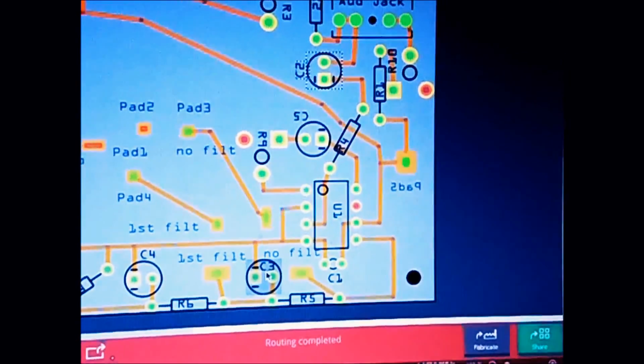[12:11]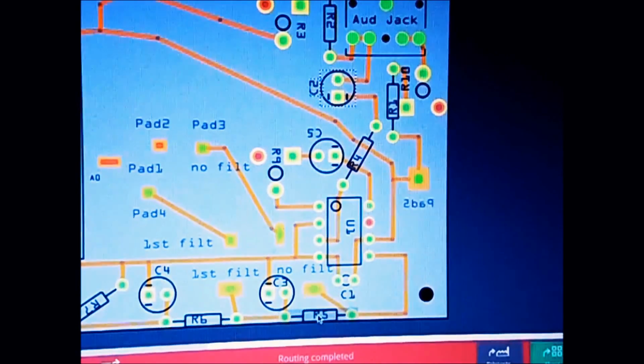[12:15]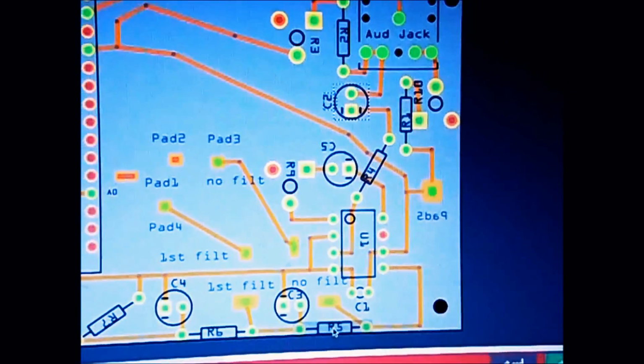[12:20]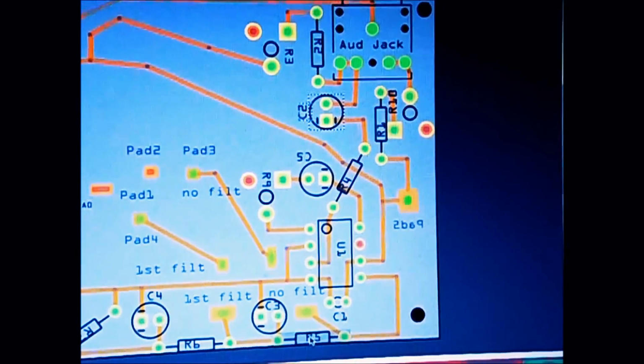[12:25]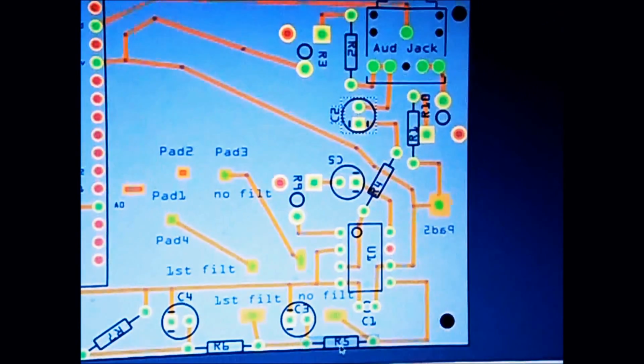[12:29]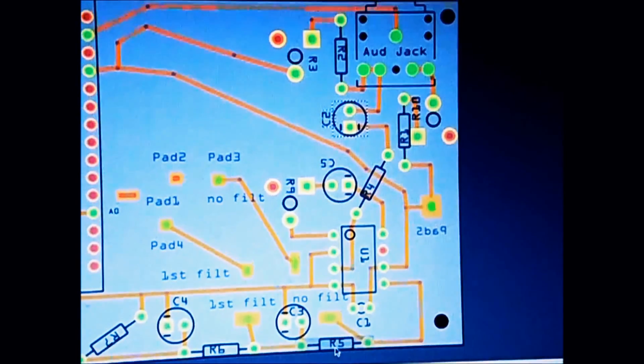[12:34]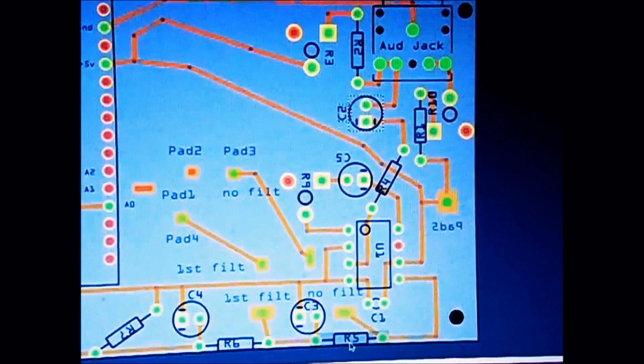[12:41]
So value of this capacitor is 0.47 UF, and resistor plus pot is 32K. I have 22K resistor in series connected with 10K pot. That's 32. When you do your calculation, that will give you low pass filter ranging between 33 Hz and 72, so you can get rid of your 60 Hz.
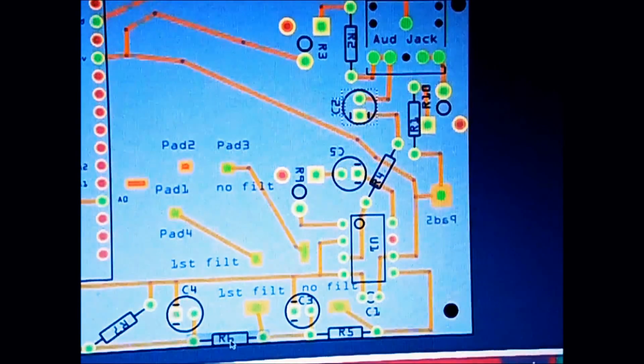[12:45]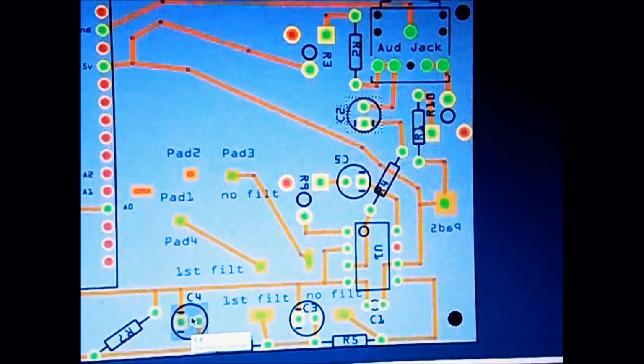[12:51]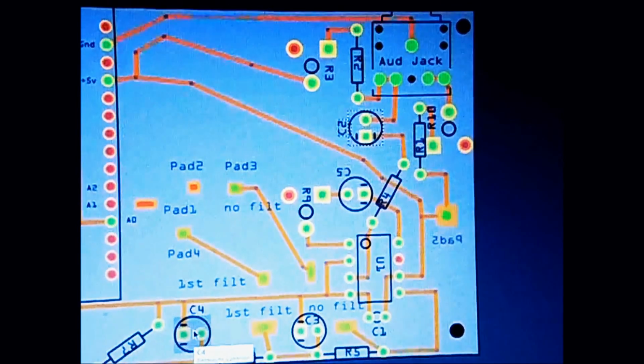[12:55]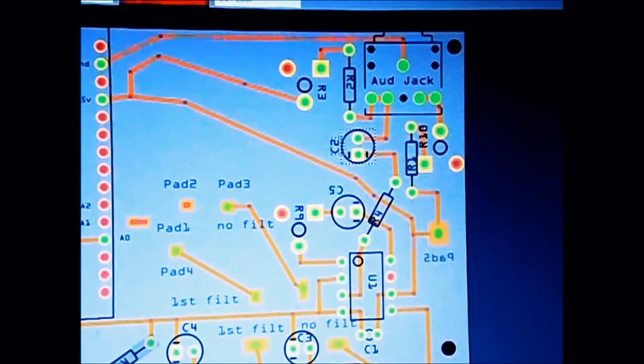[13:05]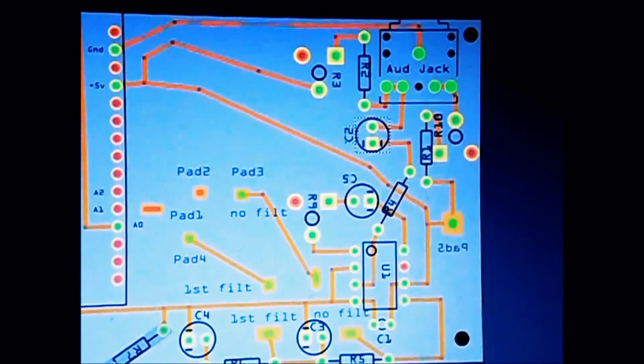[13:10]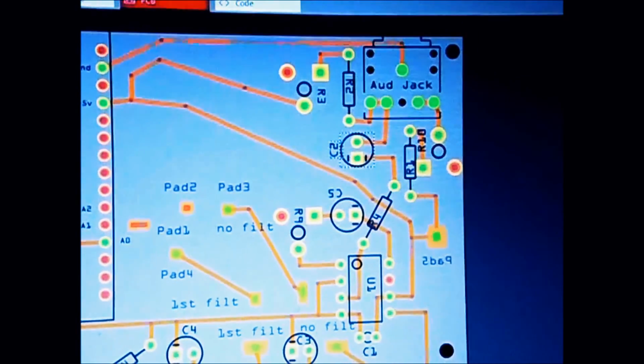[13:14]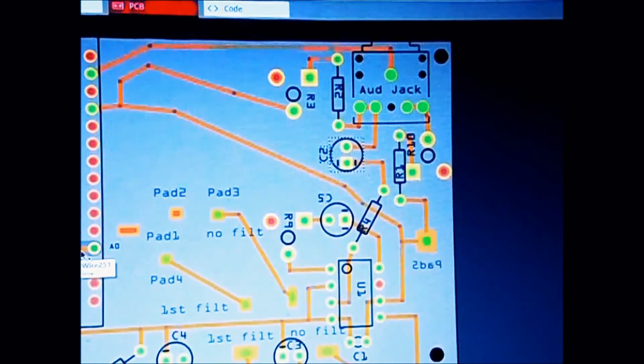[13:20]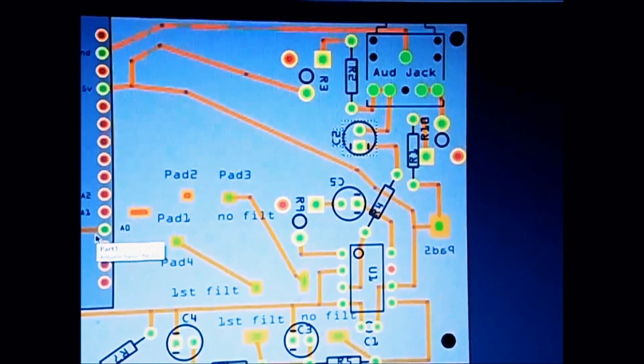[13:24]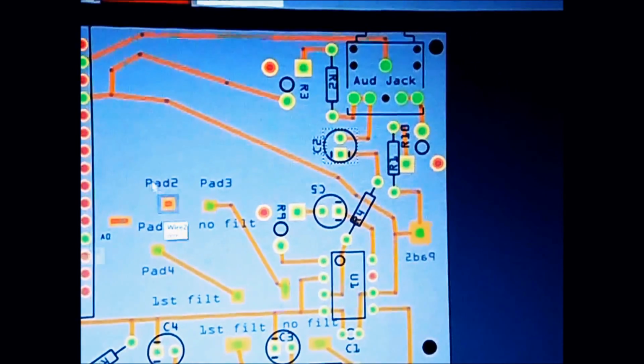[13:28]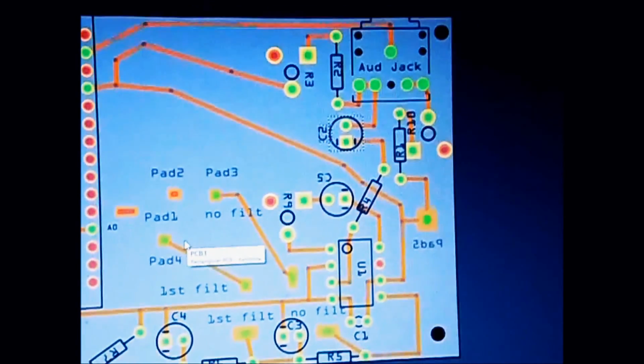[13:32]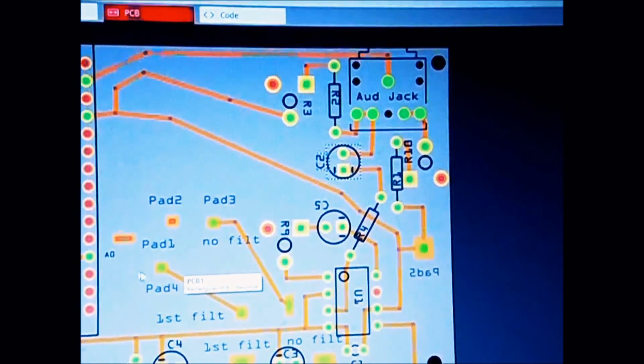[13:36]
Signal goes further down to 100K resistor and 104 rated capacitor, which is ceramic, or value of that capacitor is 0.1 UF. You drive your signal here, and this I have added only 470K resistor to ground to get rid of some impedance, but you can get it out and it will just work fine as well. And then signal travels around and it goes right in your pin number A0. That's your analog A0, and that's when you get your signal. These in middle section you can exclude. I made that for reading signal after first low pass, after second, and we don't need it for this example, it could be excluded.
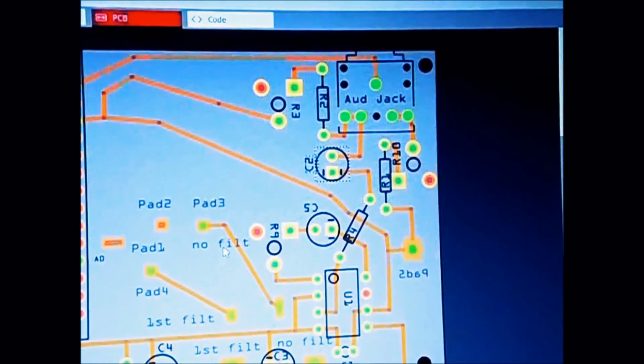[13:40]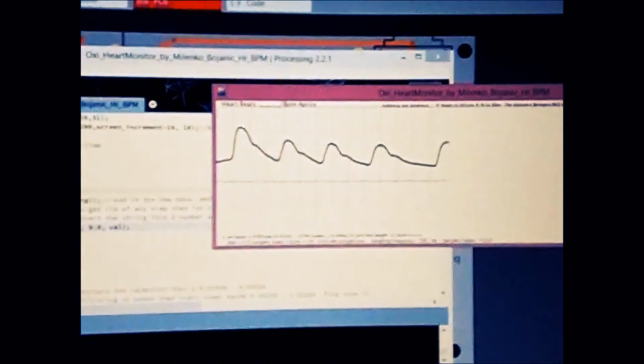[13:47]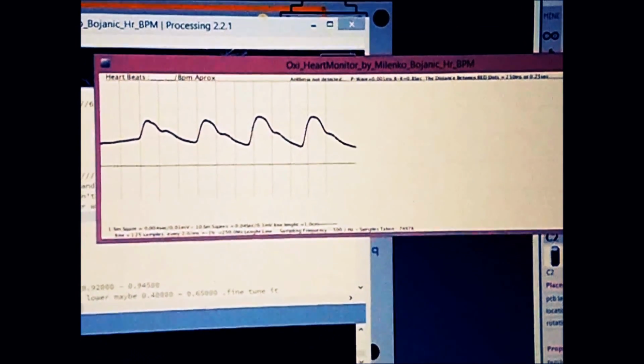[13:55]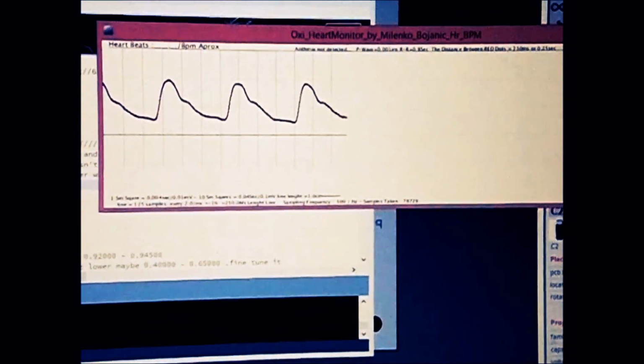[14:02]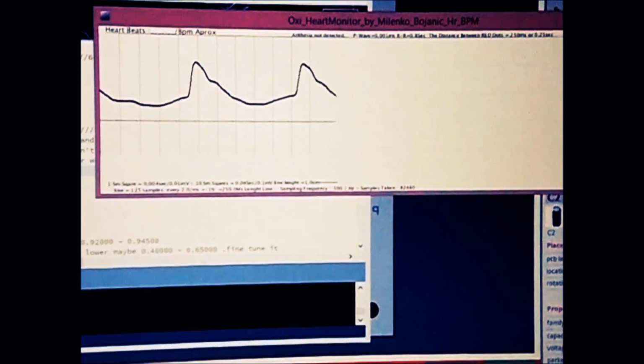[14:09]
Let's move on to the real signal now. That's the reading that we get, and so if someone knows a little bit about the signal, you can see that you have two sections. Peak when it goes really up, and then halfway it stops and it moves the other way forward, and then it goes down.
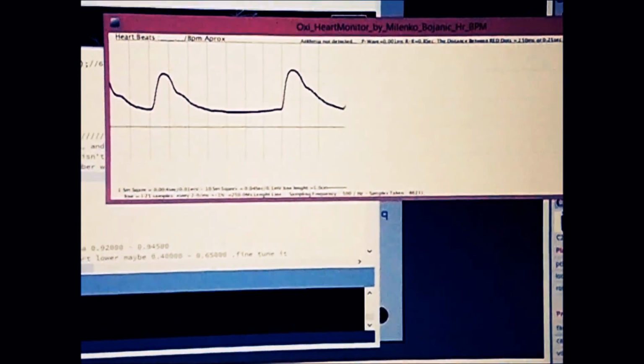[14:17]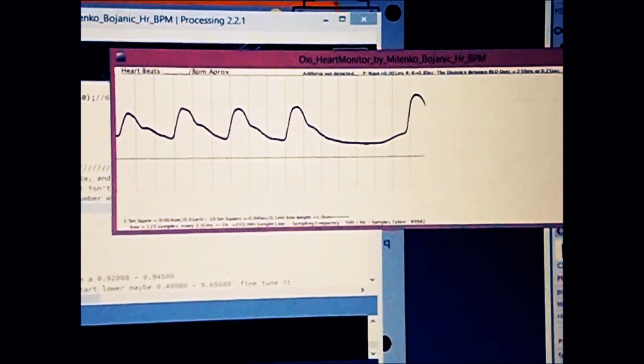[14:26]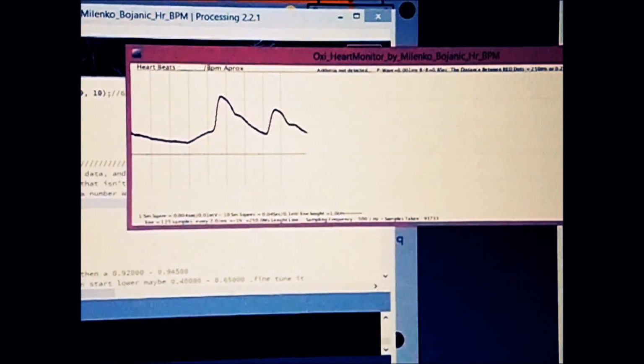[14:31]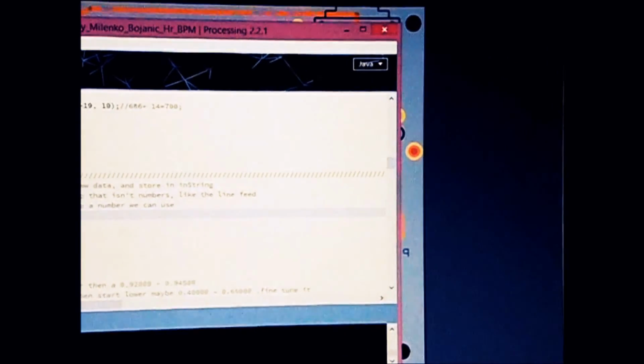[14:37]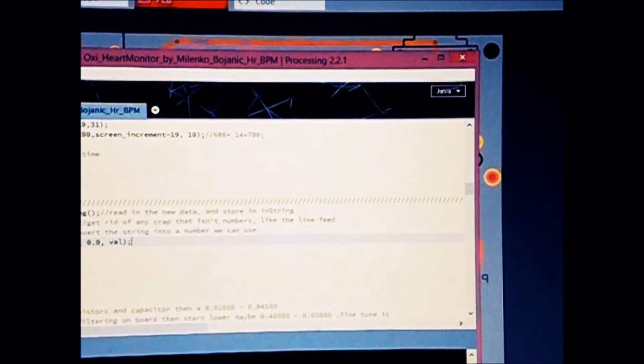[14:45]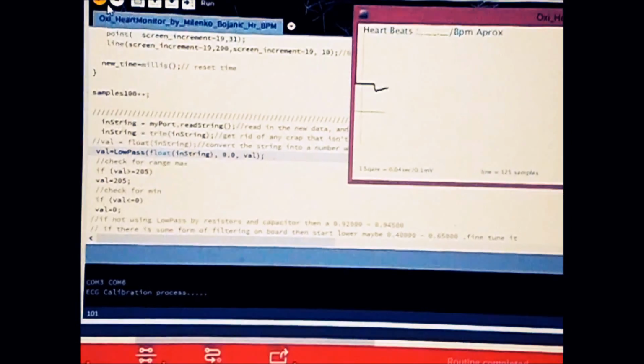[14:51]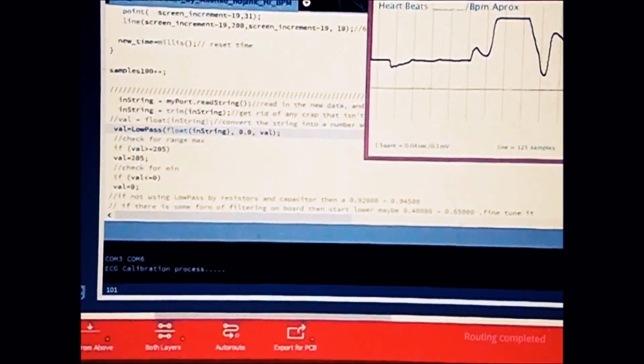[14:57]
This, what you can witness on the screen, is my PVC. That's what is called premature ventricular contraction, and it's just because my heart is not beating equally. And as you can see, there is a gap between. Now this is okay. I made it program when it finishes about 100,000 samples, it just closes, but I can just reactivate it and it will do 100 samples.
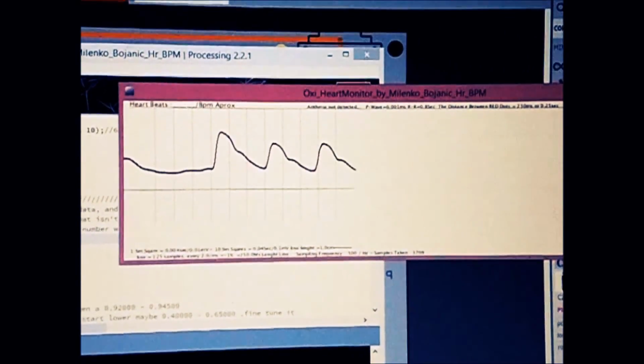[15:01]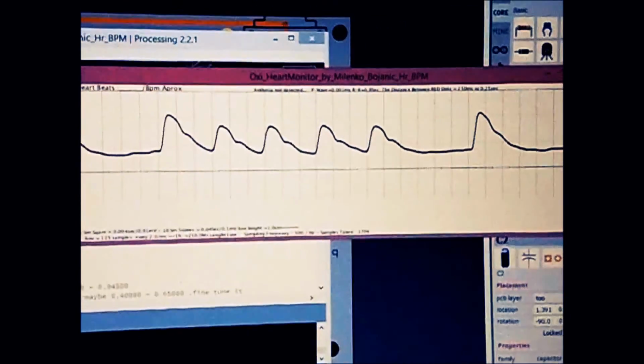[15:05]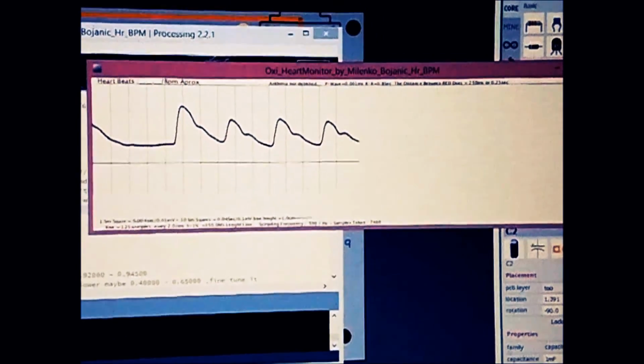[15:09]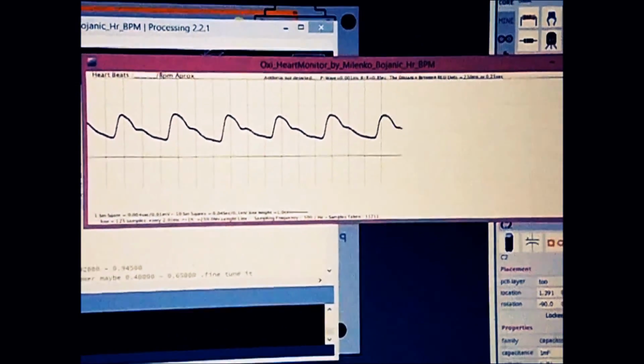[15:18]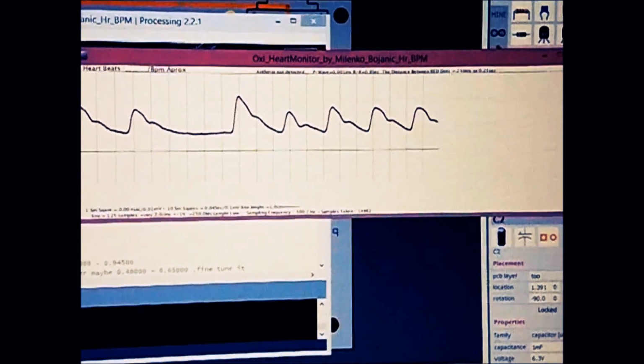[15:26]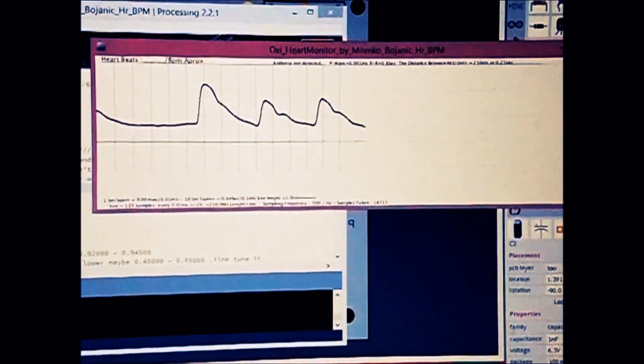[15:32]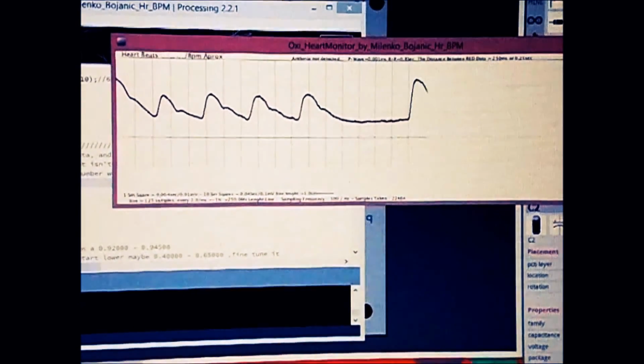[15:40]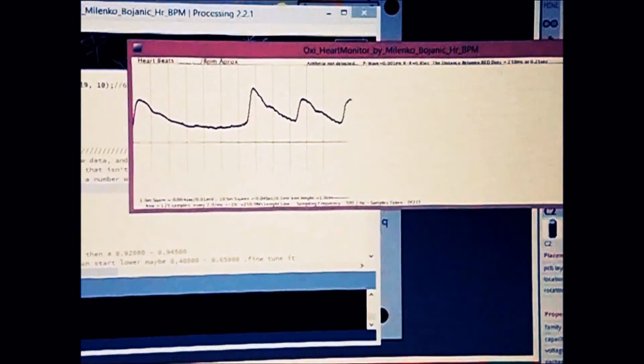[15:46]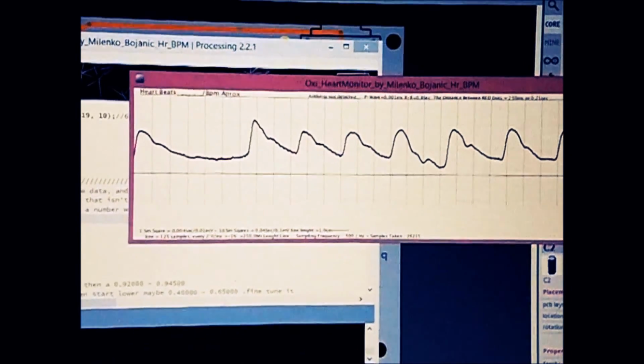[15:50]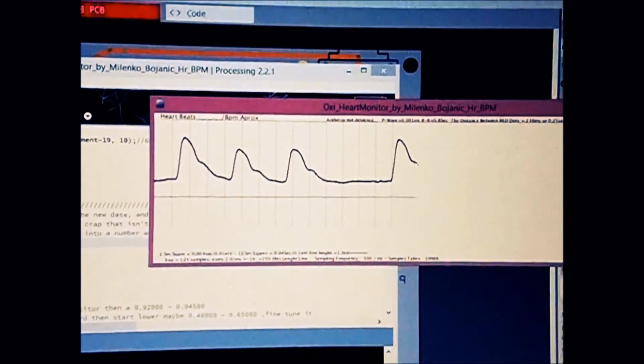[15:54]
So more or less, this is end of it actually, how we make it, and what you get is pretty good clean signal. I would mention only that if you talking about 60 Hz noise, in this example you will get 60 Hz noise only if you have light in room, because light bulb flashes about 60 times in second, and that's reflected through your finger on detector as well. So if it's no light in your room, you will notice that you don't have any noise. But noise we can reduce actually using that filter which we have and that pot.
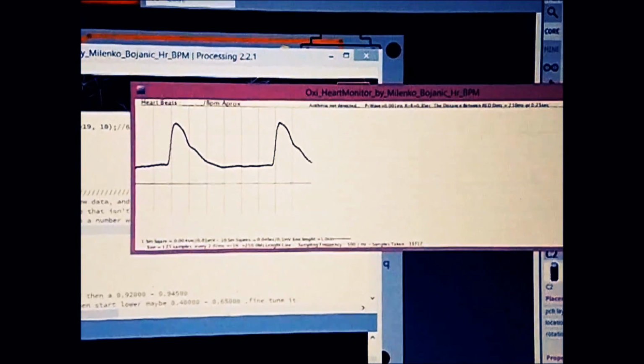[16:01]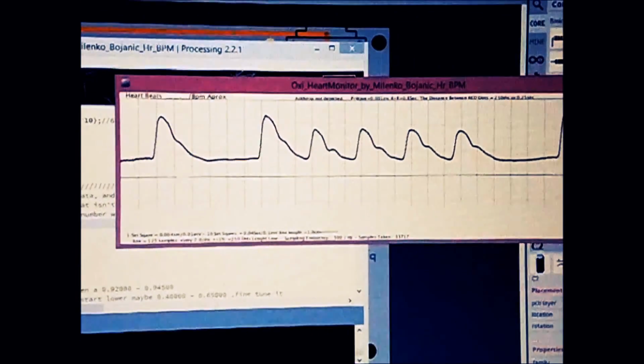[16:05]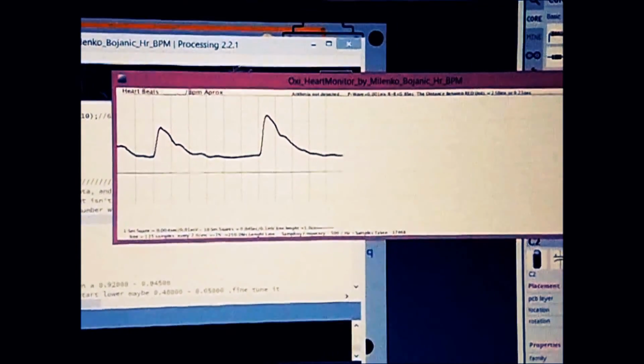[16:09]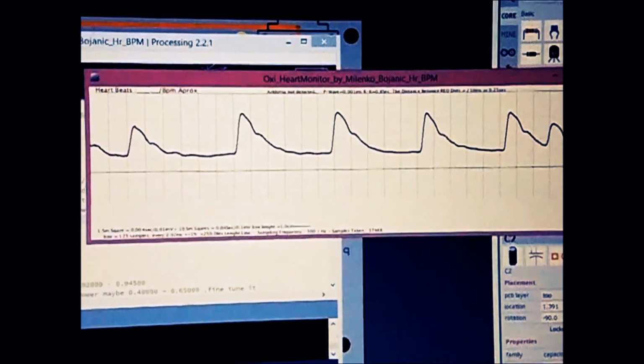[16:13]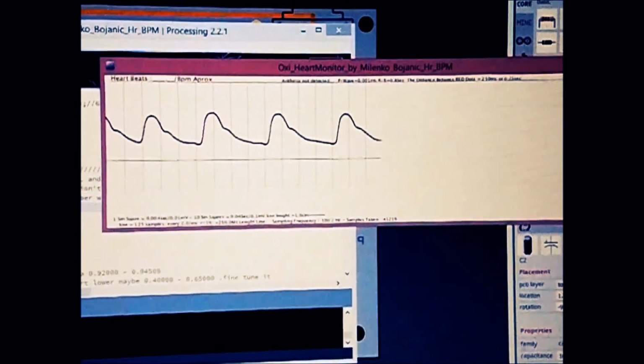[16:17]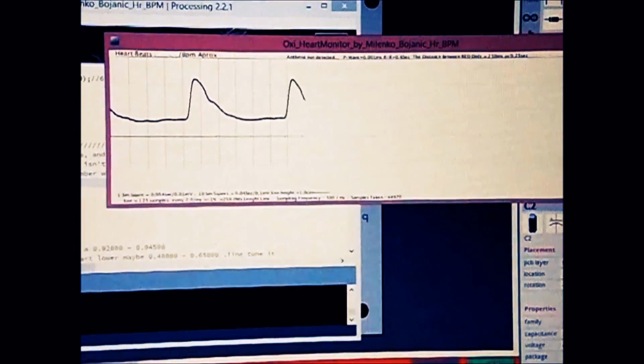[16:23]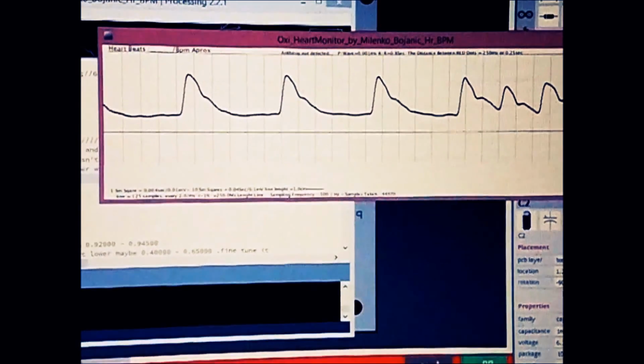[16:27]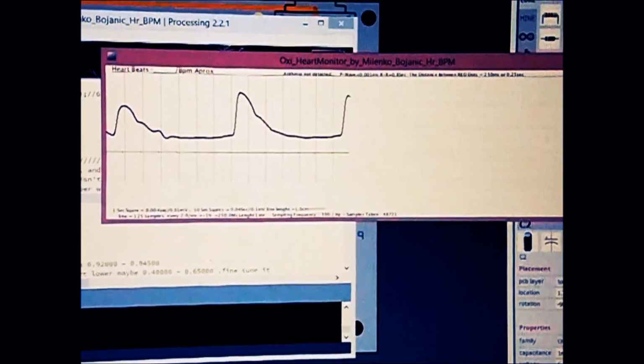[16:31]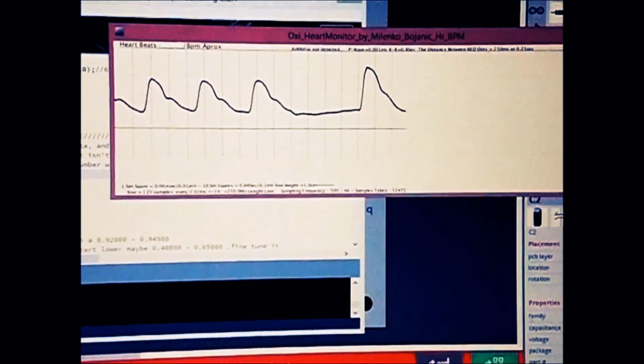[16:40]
So more or less, that's it. Hope you can recreate it. I'll put this all downloadable, so you can download it, and I will make PDF file which will be like manual, so you can actually have all details to talk you through and explain everything where you can fail and what you need to pay attention. But I'm sure that you will get the same signal as I do. And then we can do that to detect heartbeats and everything, and I'll make one little function as well to do that later.
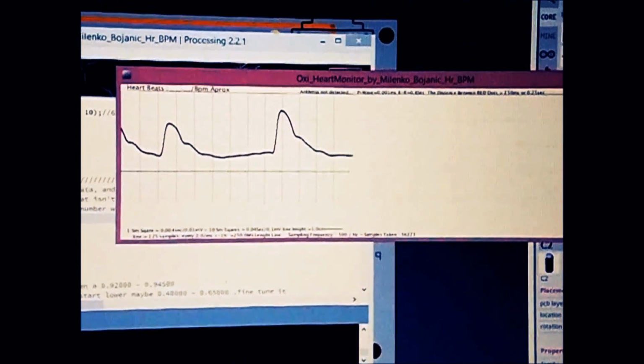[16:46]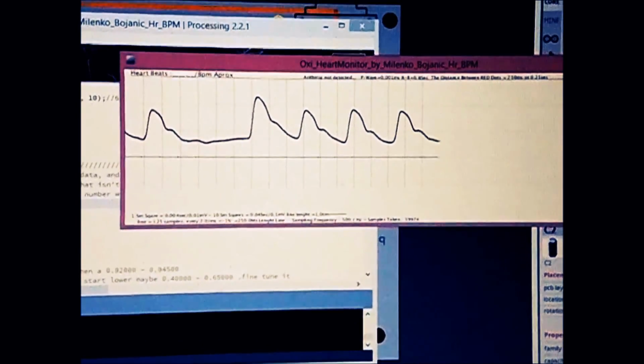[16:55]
I have made in this program, actually each of these bars, as you can see, is 250 milliseconds, so you can actually, if you calculate the gap, you can tell what's your heartbeat, and then divide number of milliseconds by 60,000. You will get actually heartbeats.